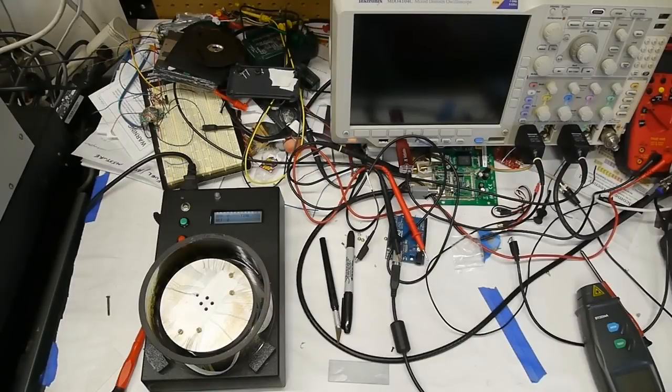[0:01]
Today on Applied Science, I'm going to talk about how I designed and built this spincoater. I'll describe everything I learned about low-cost motor controllers and make all the code and circuitry available in case you have a similar motor-based project. So let's see this thing in action.
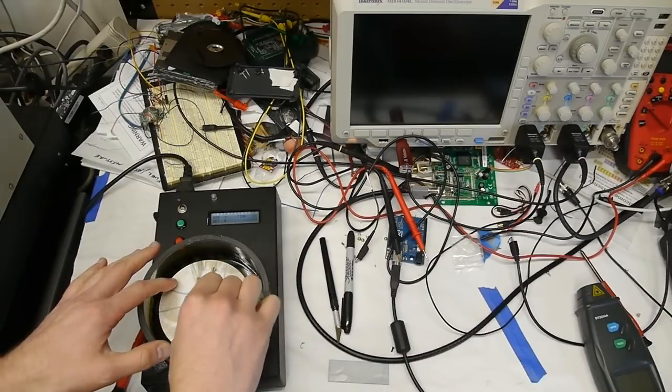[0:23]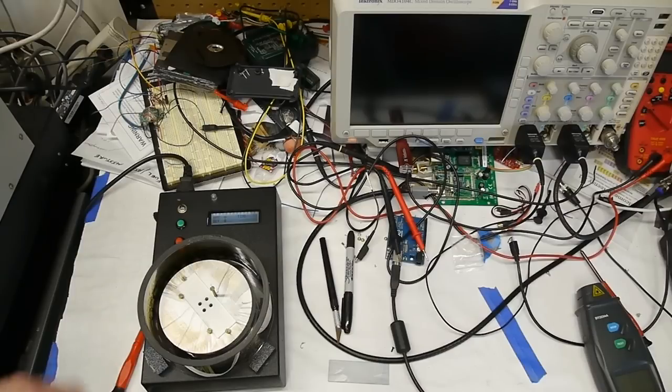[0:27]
It's got a rotor here, and I've put flathead brass screws in here so that when I slip a microscope slide in and put one more screw in, it holds it down and keeps it from moving on the rotor. So I'll press the green button, and it spins at about 400 RPM indefinitely. The idea is that you want to put a liquid onto the spinning slide, and the spinning motion of the spincoater will fling the liquid out and make a very even coating on the slide.
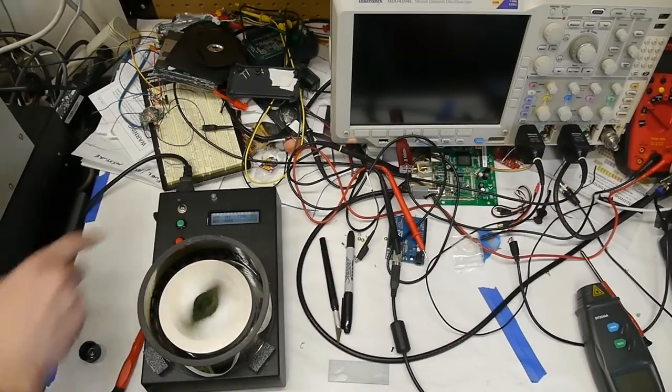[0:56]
So I'm going to use this liquid, which is a photoresist, and I realize I'm doing this under shop lighting, so it's not going to be really useful, but this will just give you the idea. And then we press the green button again, and the machine goes through a very controlled acceleration up to about 3,000 RPM. And when it reaches 3,000, it holds the speed, and it's counting up in seconds.
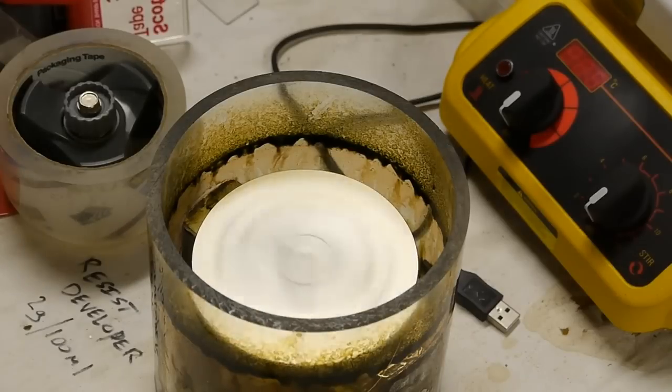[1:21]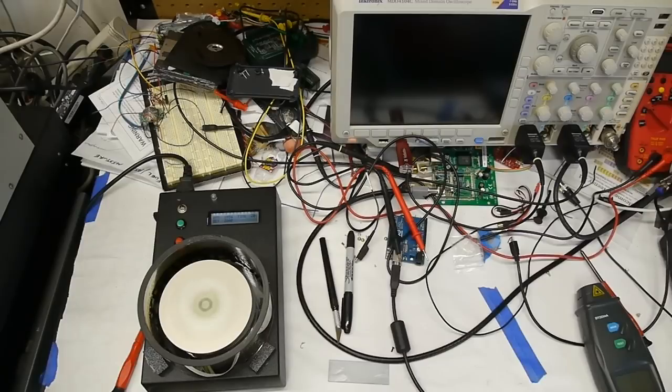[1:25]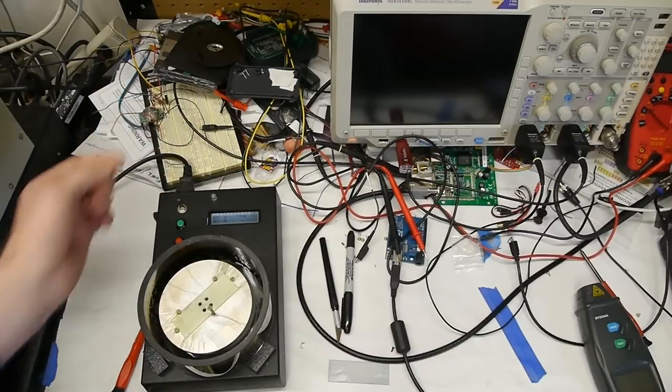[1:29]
So the whole idea here is that we want this process to be very repeatable because we want a very consistent, even layer of photoresist. I had a different spin coater previously that didn't work nearly as well, so this is a really nice upgrade. You'll see we're getting up to about 30 seconds. 32. The machine has a really rapid deceleration, and then you can see that the slide is now nice and coated with this green photoresist.
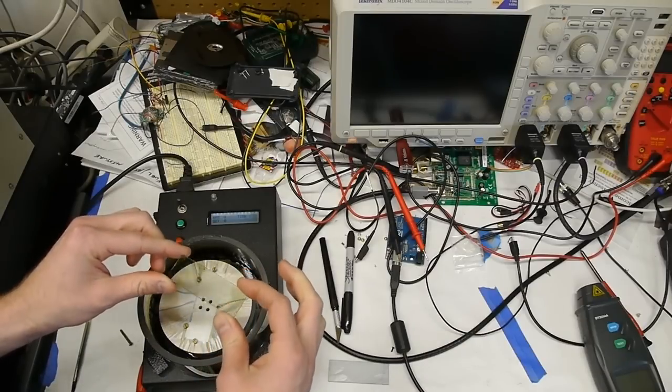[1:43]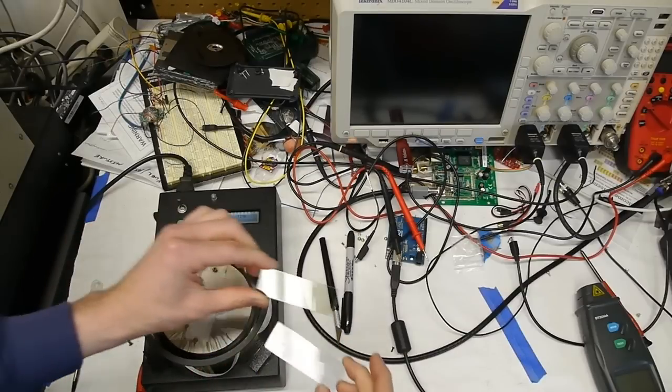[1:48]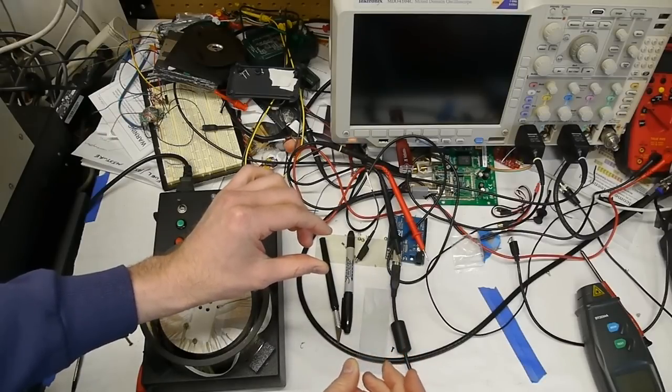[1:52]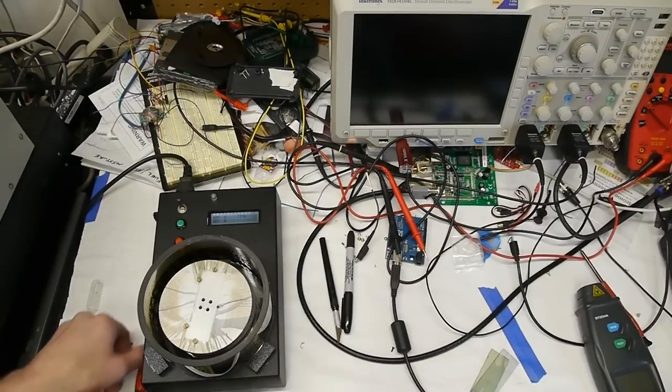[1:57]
So here's a slide I coated earlier, and you can see that after it sits out under the fluorescent lighting, this one is nice and green, this one is nice and blue because it's been exposed by the fluorescent lighting in the shop. So let's take this thing apart, and you can see how it's built.
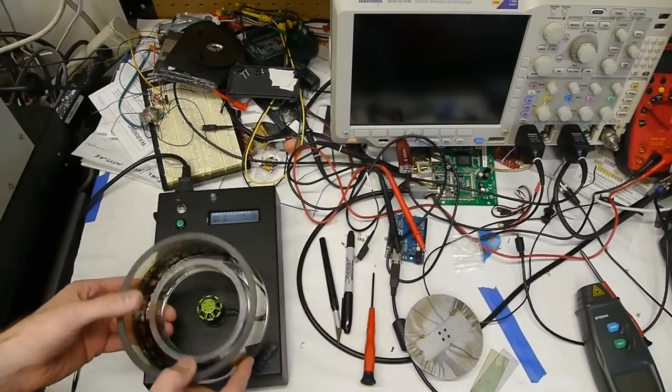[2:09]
This splash guard just lifts out. It's actually just sitting in here captive side to side with these plastic blocks here, but it really just lifts out. And the reason it has this internal lip here is so that when the thing flings excess liquid out, it will fall down into this moat instead of making a mess on the table.
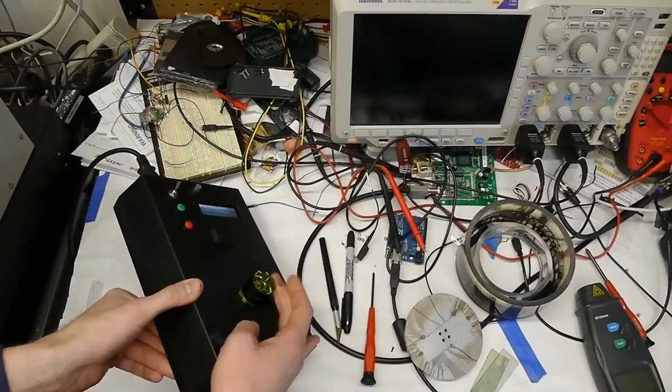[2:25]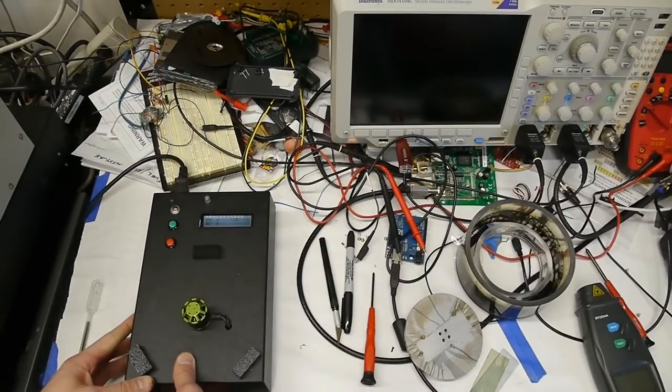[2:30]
So as you can see here, this is using a motor designed for like a quadcopter or something like that. And the reason for that is that the market for these motor controllers and motors for quadcopters is really developed. So you can get these for very cheap. I bought a couple just because, I mean, this is like $15 or $10 or something like that. And the controller for it is similarly about 10 or 15 bucks. It's so cheap that even single chips from DigiKey that would do a similar thing cost almost as much as the entire board. So let's open this up and we can see what's in here.
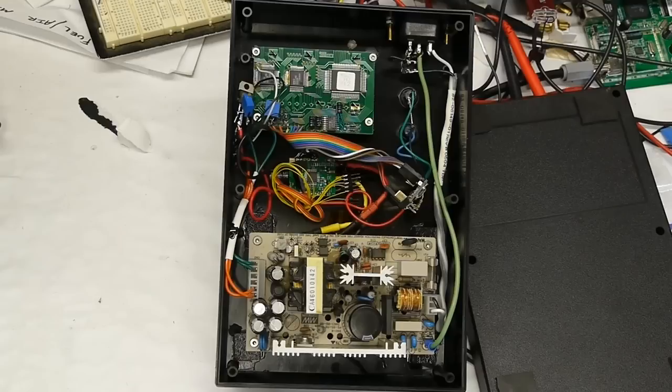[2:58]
Okay, so here's the insides of the box. And this project was definitely a case of using whatever I had available on the shelf. So a lot of these things I already had. In fact, the only thing that I actually bought for this project was the motor and the controller itself. But anyway, let's take a look at this.
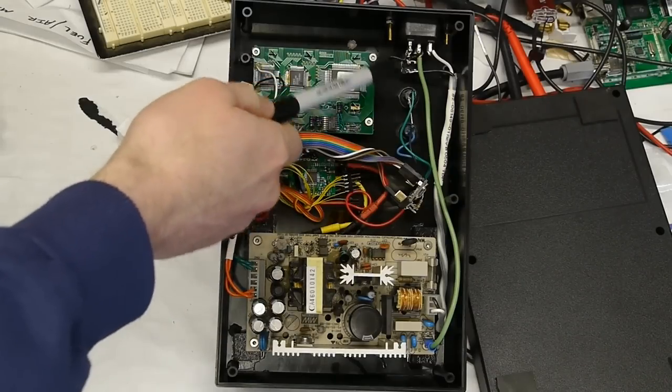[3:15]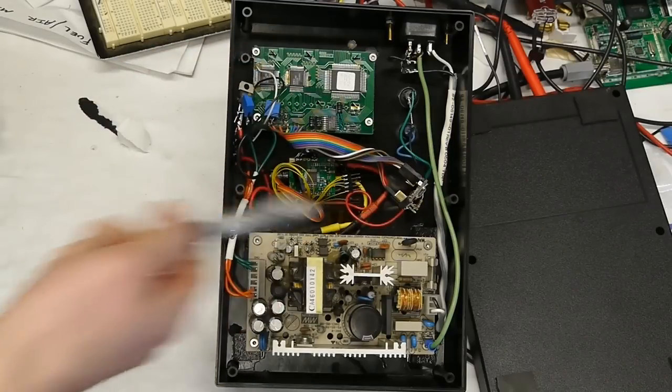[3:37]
So we've got switched mains coming in here, coming down to this switch mode power supply, it's about 7.5 or 8 volts. Kind of weird, but that's actually the voltage that I needed, and I just happen to have this laying around. Then we have an old-fashioned parallel interface LCD up here, the motor controller, and an Arduino Micro that runs the whole show. So those two buttons are just connected right up to the Arduino Micro, and we're using its internal pull-up resistors to sense the state of those buttons.
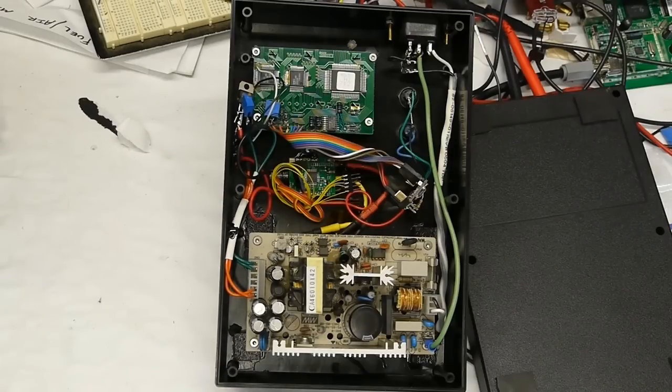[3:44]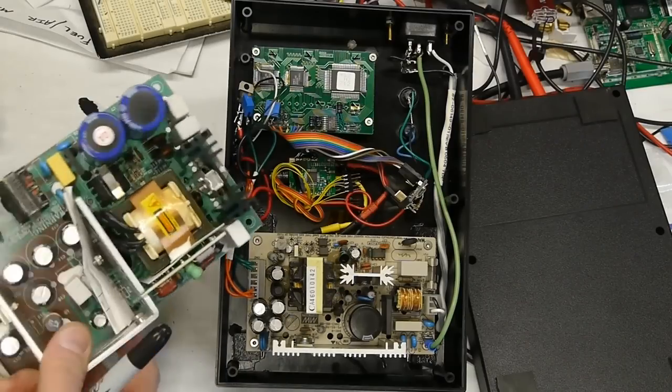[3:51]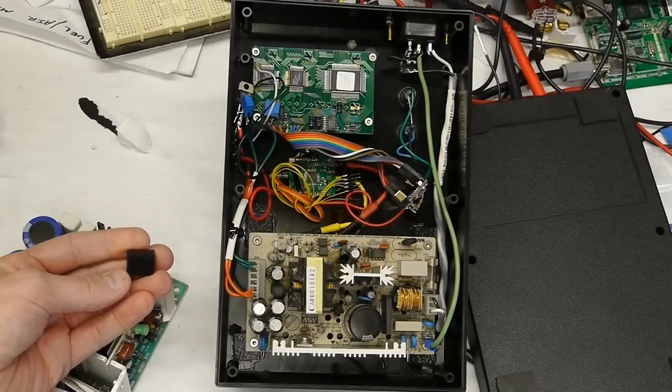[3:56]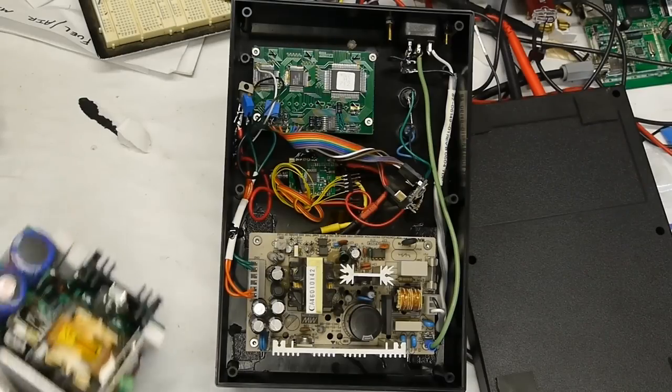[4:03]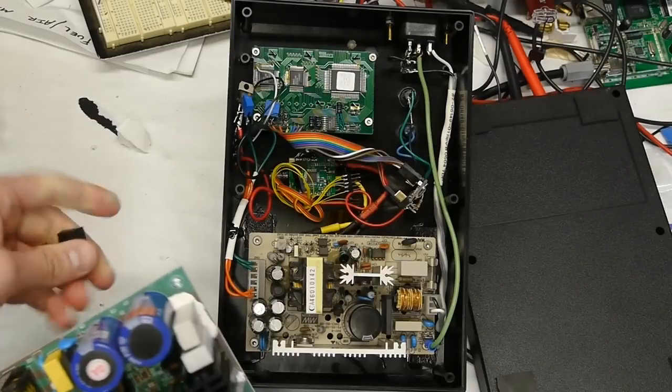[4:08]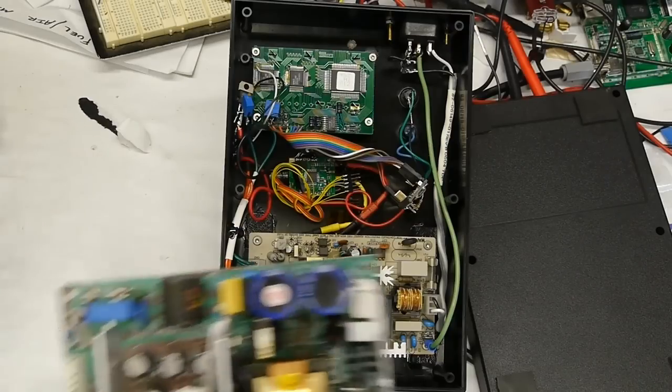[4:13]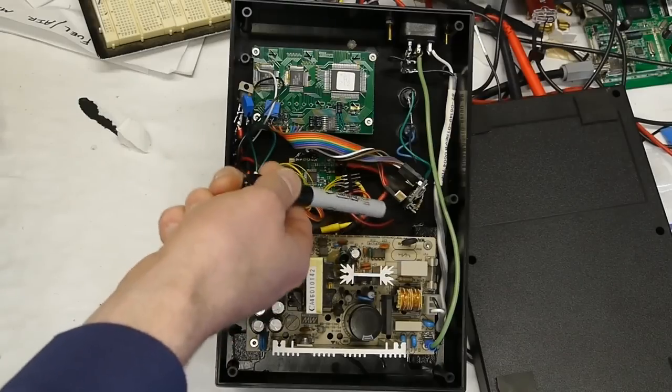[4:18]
A nice little tip, if you're using an ABS project box like this and you want to mount a circuit board or a heavy thing like this, what you can do is cut some chunks of thick ABS plastic, this is maybe 3/8 of an inch thick, and drill a hole and tap it in this chunk. Then attach the chunk with a screw to your circuit board, kind of like that, thread that in there so that there's a plastic foot here, and then just drop the whole thing into your plastic enclosure, and then add some solvent weld.
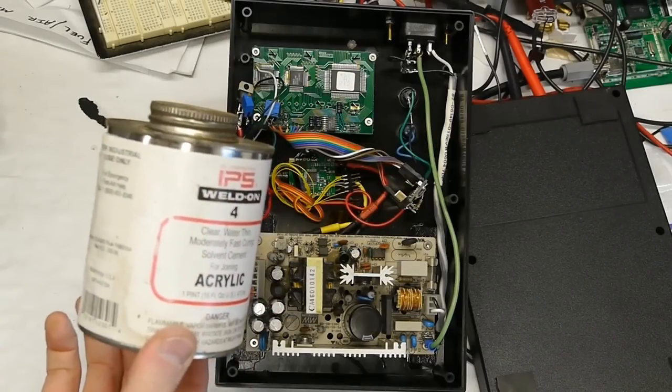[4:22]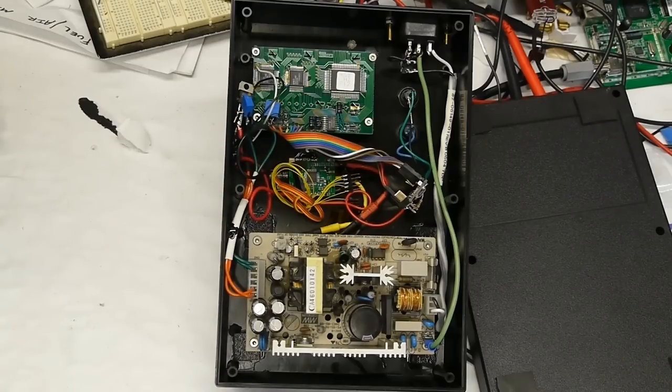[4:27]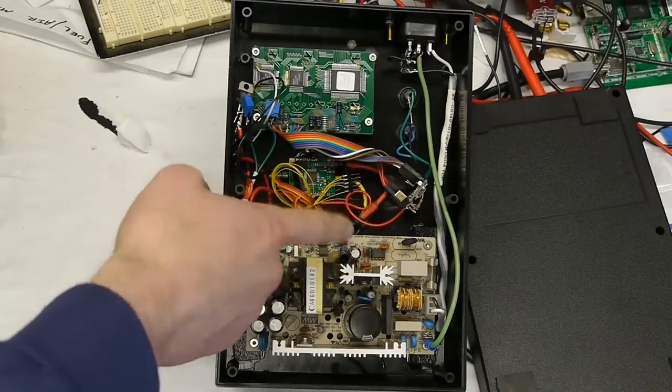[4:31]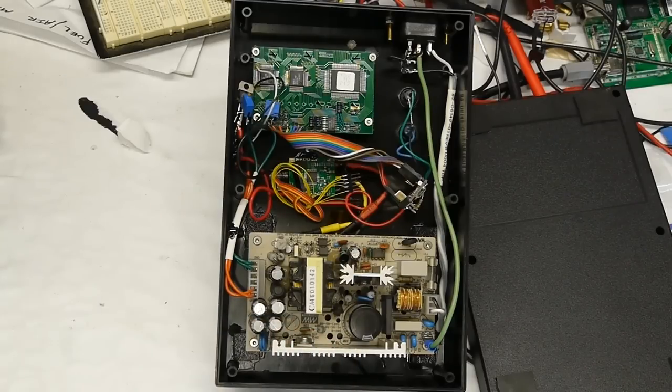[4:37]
I ran out of thickened solvent weld, but you can use this on ABS. You can also just use sewer pipe cement from the hardware store. It works great. Very strong. Like that foot, the project box itself will break before that foot comes off. So if you need to fix something like a heavy power supply board, this works just fine. It also gives you the ability to just kind of move it around inside the project box before you commit to it.
Okay, so let's talk about motor selection for a second. When I started this project, I didn't know that I was going to be using one of these quadcopter motors. I thought, oh, maybe a stepper motor would be okay. This project is not particularly well suited for a stepper motor because the speeds are kind of high. So you saw it was running at 3000 RPM, but potentially we'd want it to go up to 4 or even 5000 RPM, and that's really pushing it for a stepper motor.
In addition, the steppers don't really turn particularly smoothly, and since there's no feedback, you kind of have to add a tachometer or a spin sensor to make sure that you aren't missing steps. I realize that the rotor on this thing is not particularly heavy, so with sort of a known acceleration profile, it's unlikely that you'd miss steps, but even still, you'd probably want some feedback. So I decided not to use a stepper motor.
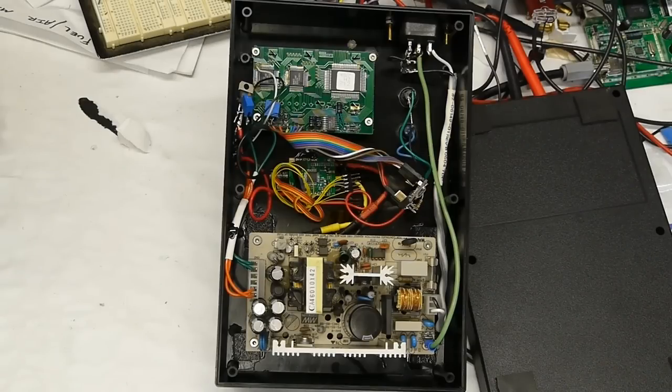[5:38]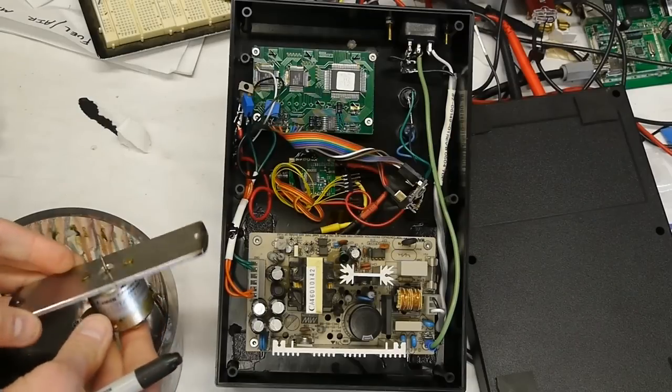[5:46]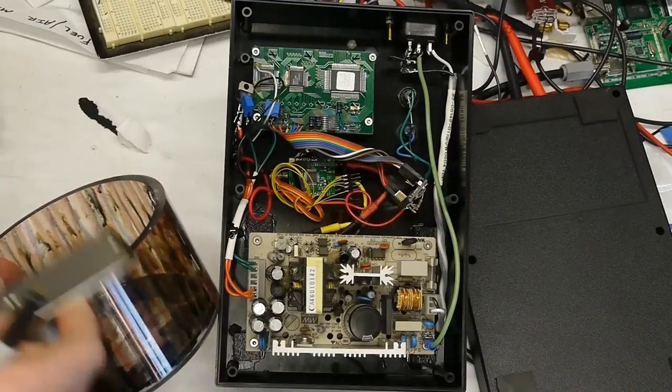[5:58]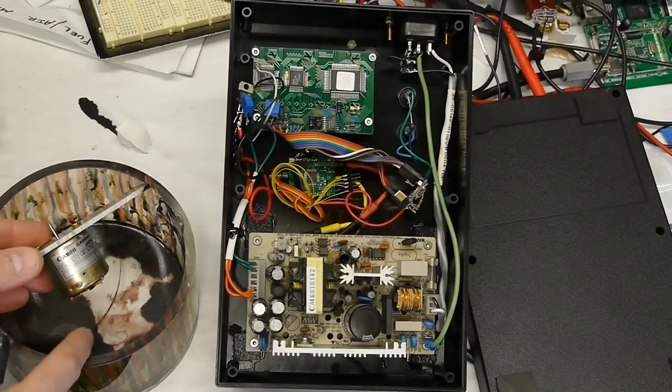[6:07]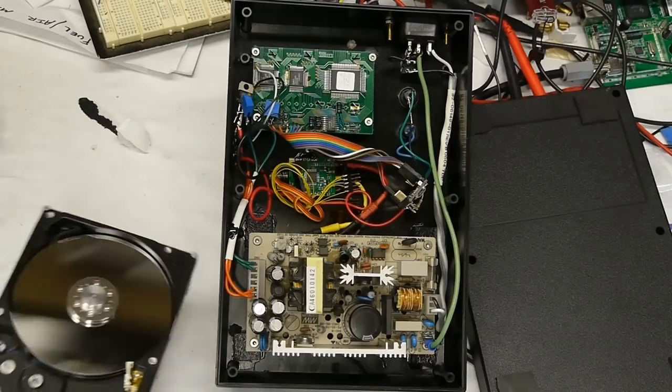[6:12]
And then that leaves, you could just use a plain old DC motor. In fact, in my previous spincoater, this was the older model, I just used this old cheap DC motor like out of an old cassette deck or something like that. And I had that same aluminum rotor pressed onto the shaft here, and this thing sat down in here like this. This thing was a little bit taller, I cut this off to make the new shield. But anyway, it's not quite enough power. It would be nicer if it accelerated and decelerated with more control. So that was out.
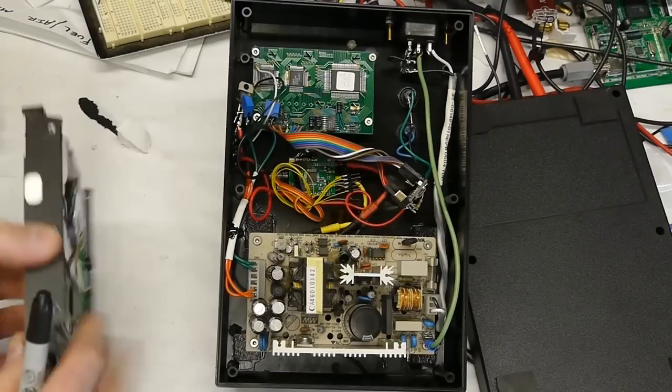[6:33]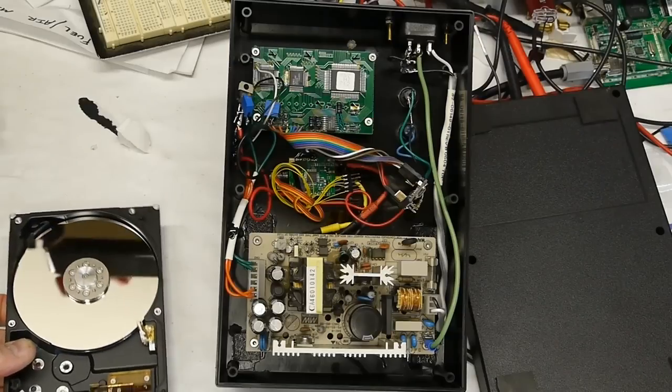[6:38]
Another good idea is to use a hard drive. So when thinking about stuff that already exists in the world that kind of does what we want, a hard drive is actually pretty close. This will get up to 7,000 RPM, no problem. It's even got this nice bearing system so that the thing spins smoothly, and it even already has a disc shape on the front. And the motor is built into this nice aluminum housing, so we can bolt this down, it'd be great. And in fact, if you go on eBay, there's a company selling low-cost spincoaters made out of hard drive motors. And when I say low-cost, I mean like $500 to $1,000 compared to what the semiconductor industry charges for these things, which is probably tens of thousands.
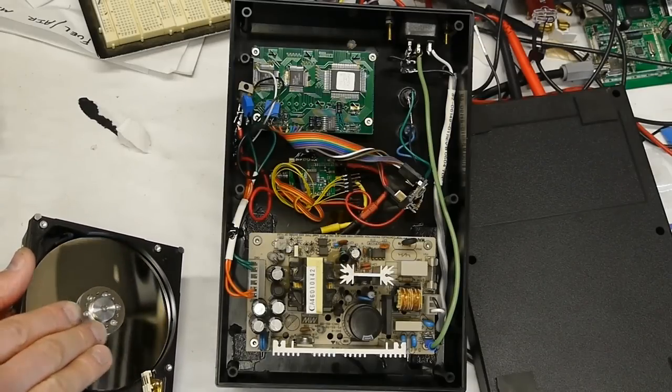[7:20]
There's another nice feature about these. These often have a solid spindle. So this particular one doesn't, but on some hard drive models, the center of the spindle actually doesn't spin because it goes all the way through the motor to the bottom. And the cool thing about that is if you attach a vacuum hose to the bottom, you can put a rubber O-ring on the top, and then when you put your glass microscope slide down on that, you can use vacuum to hold the microscope slide down, and it gives you this nice convenient vacuum chuck. So I liked that idea.
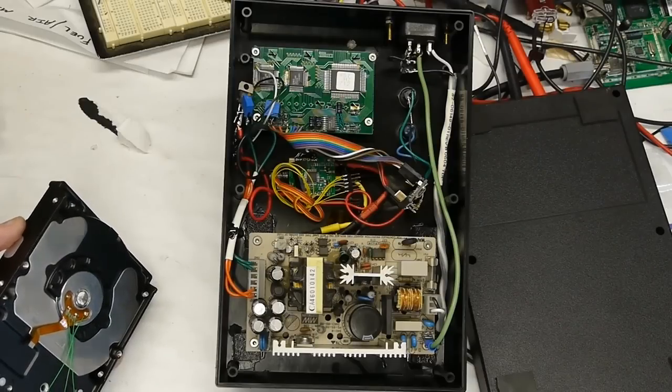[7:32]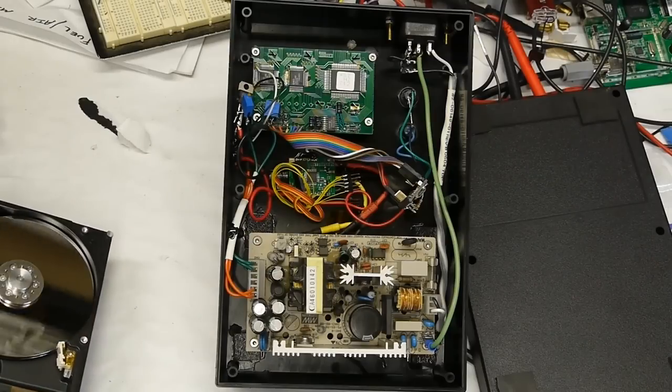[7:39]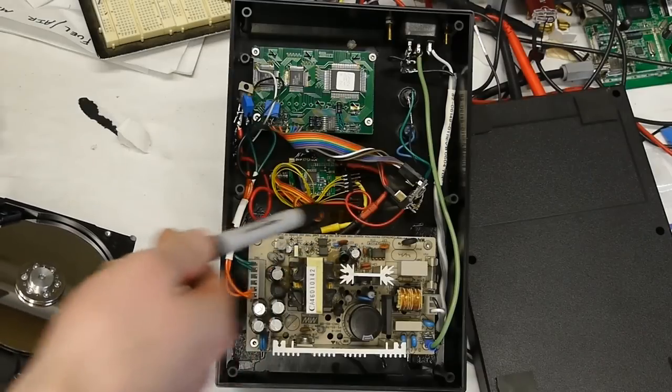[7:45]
However, these motors still don't have quite enough power. So, your 7200 RPM hard drive may take 5 or 10 seconds to come up to speed, and that's actually about right. But when I started this project, I thought I needed to have much faster acceleration to have a good spincoater. And in a minute, I'll show you this thing connected up with the debug port, and it's actually pretty impressive how quickly this thing can change speeds.
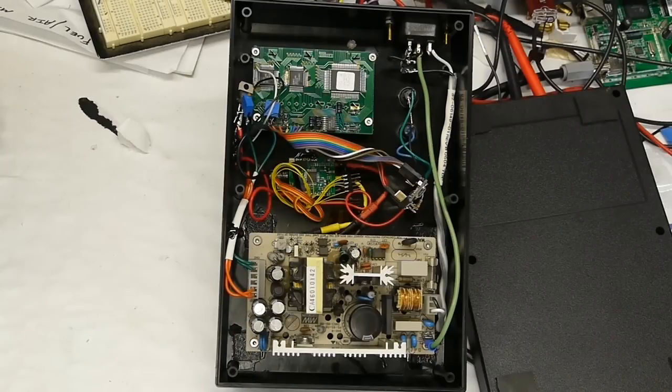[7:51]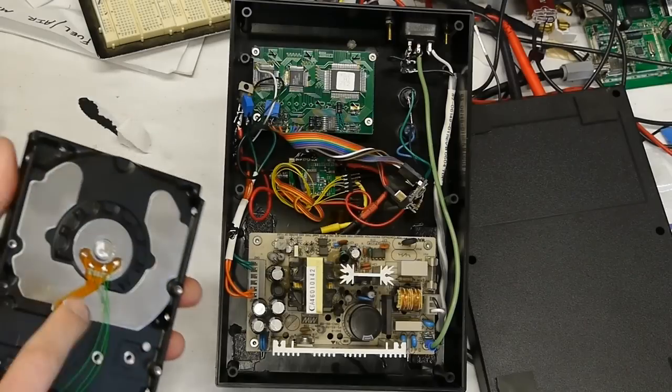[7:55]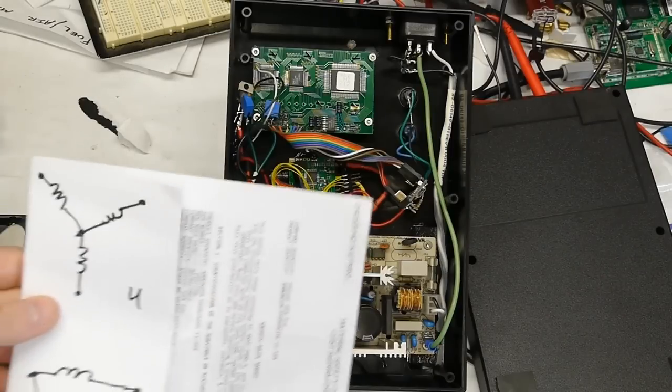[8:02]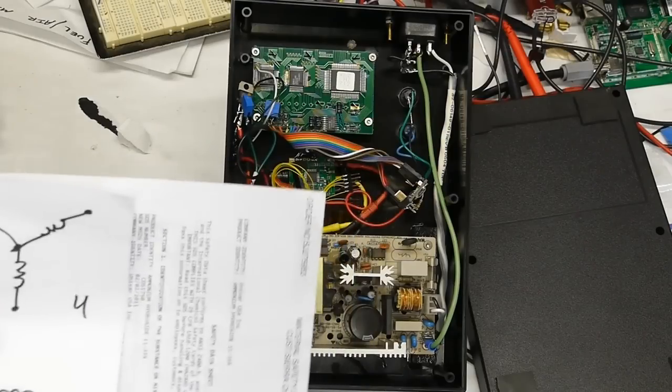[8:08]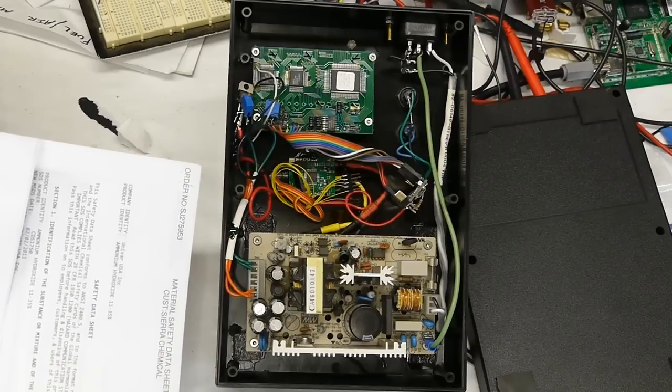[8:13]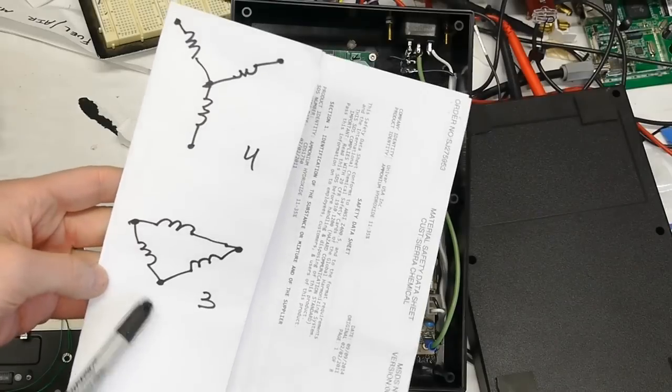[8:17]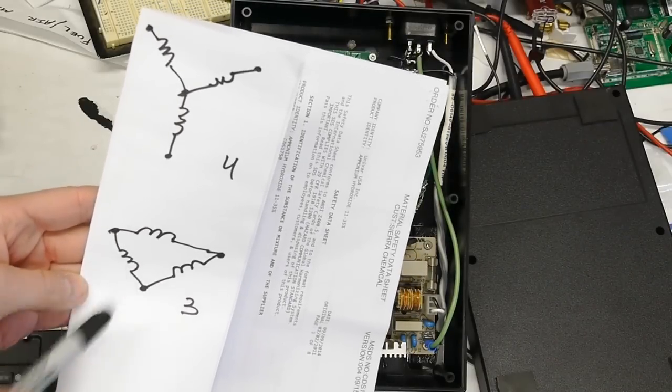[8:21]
Another slight problem with using a hard drive motor is that this is a 4-wire brushless DC motor, and it's wired up in what's called a Y configuration. So the 4 wires are 1, 2, 3, and 4, and obviously it's called a Y because it looks like that. But most of the brushless DC motors that are built for quadcopters and similar things are 3-wire, and it's called a delta configuration because it looks like a Greek delta. And so the 1, 2, 3 wires there, and these are not really interchangeable.
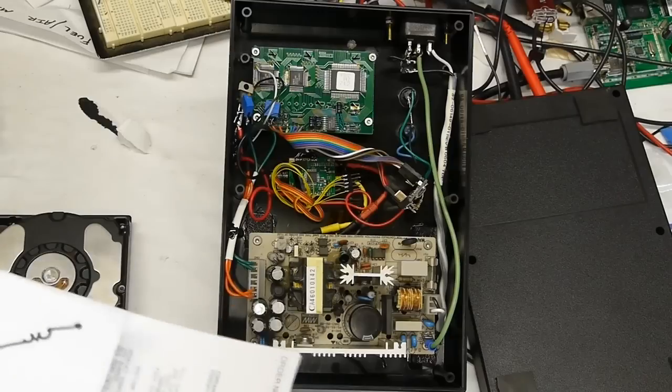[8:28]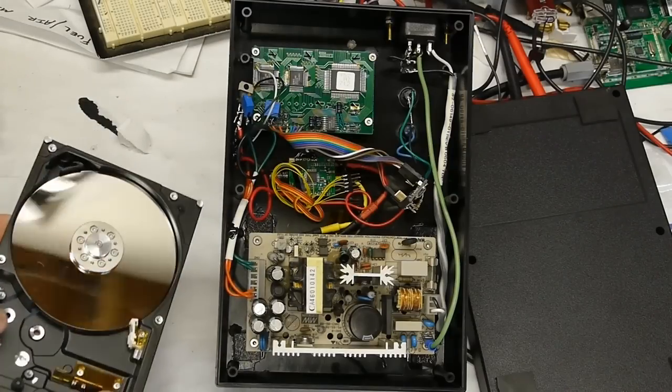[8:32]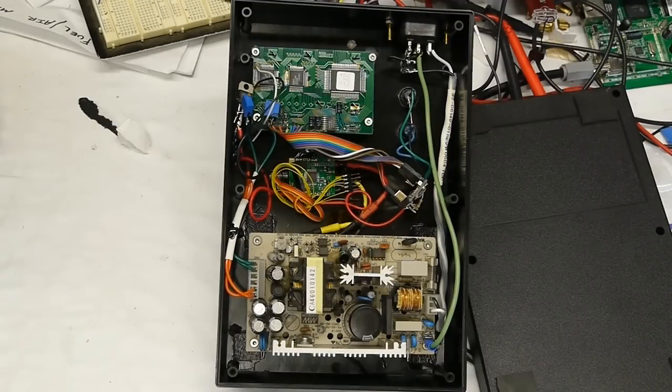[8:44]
You can sort of get away with it a little bit, but generally not really. And also the coil resistances for these are generally not quite the same as they are for quadcopter motors. And then later on you'll find out that the controllers that they make for these things are so cheap that it's just silly not to use them. So I decided not to go with the hard drive motor.
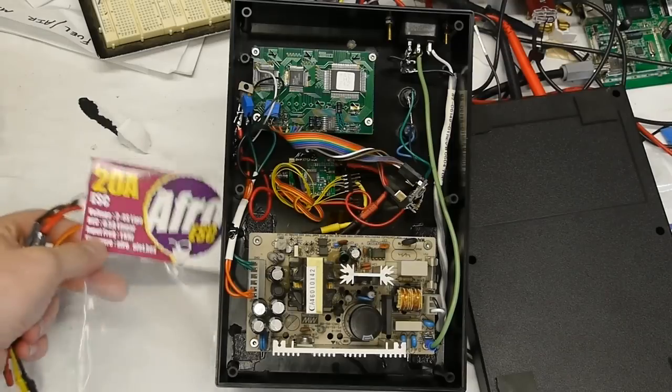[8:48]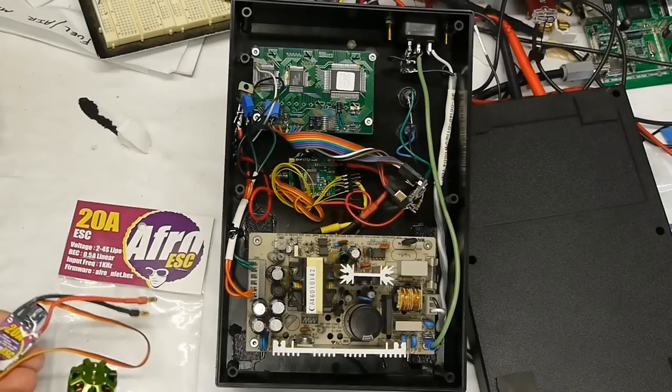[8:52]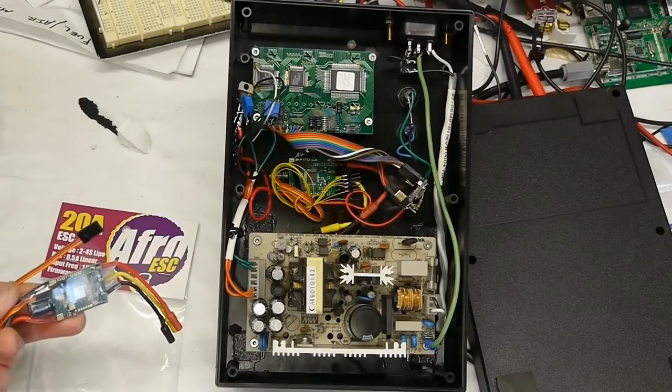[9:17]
If you go to a site like Hobby King or one of the places that sells a whole bunch of stuff for making your own quadcopters, you'll find the prices on these things are just really low. I mean, this was probably $10 or something. I think they even have small motor controllers that are even under $10. And it's kind of silly because if you go to DigiKey and just look up the parts, like if you just buy all the FETs to make this, or even a monolithic chip that's got all the FETs in there, even that's going to get close to $10 just in parts.
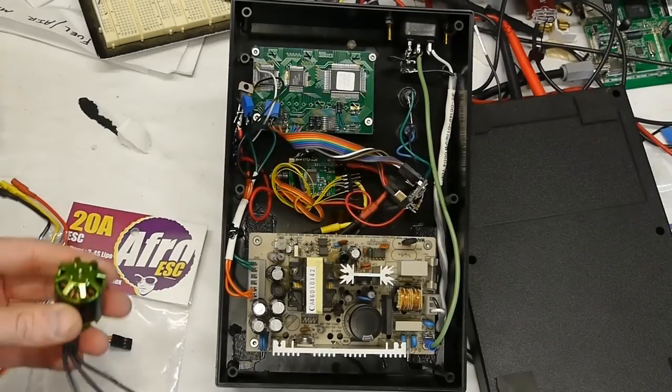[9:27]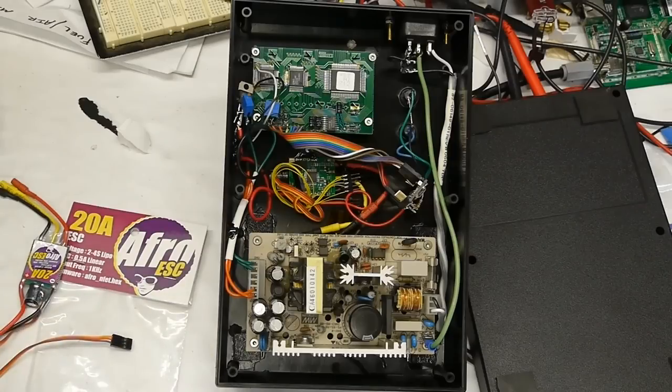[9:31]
And so it's kind of silly to not buy this since it already has the firmware, it already has the controller, the capacitor, I mean, everything. And then the motor itself is $10 to $20, and it's known to work with it, so you kind of are guaranteed a working system just with these two parts.
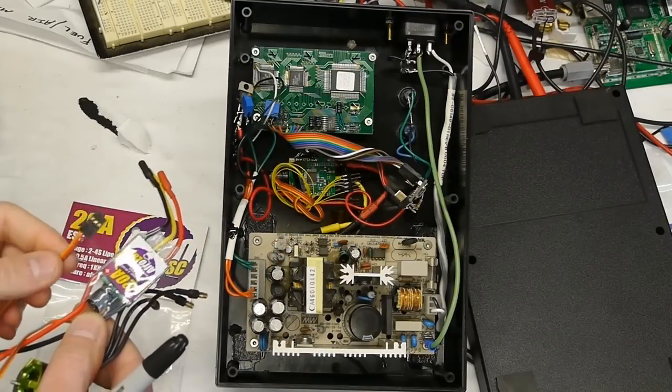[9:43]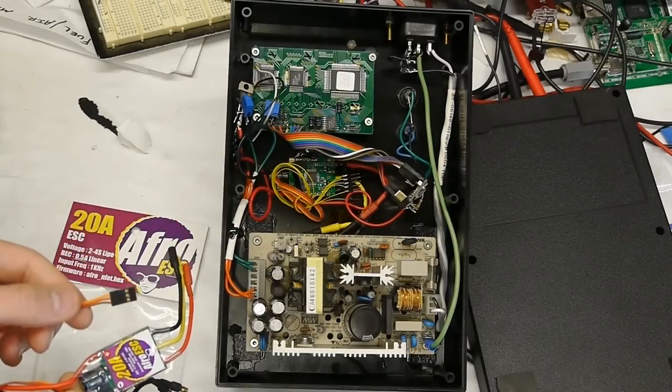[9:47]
If you wanted to take a simple approach, you could just use these parts as they are, and these motor controllers are designed to be controlled by this servo standard. So it's 3 wires: ground, power, and the servo signal, and the servo signal is just a pulse width that varies from I think half a millisecond up to 1.5 milliseconds, and that sort of indicates the throttle range. So you could totally connect this right up to your microcontroller, and people have already written servo libraries, so you can just tell it how much in percentage you want, and everything will work just fine.
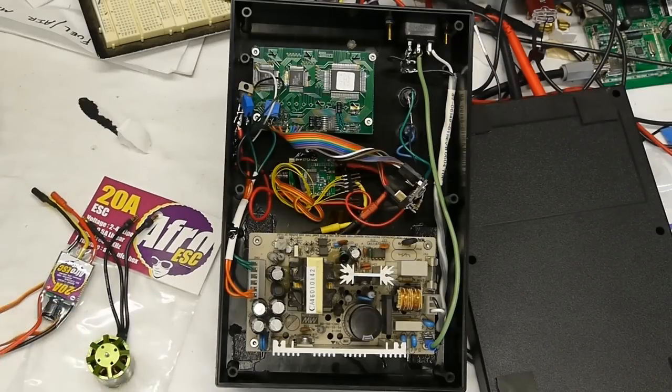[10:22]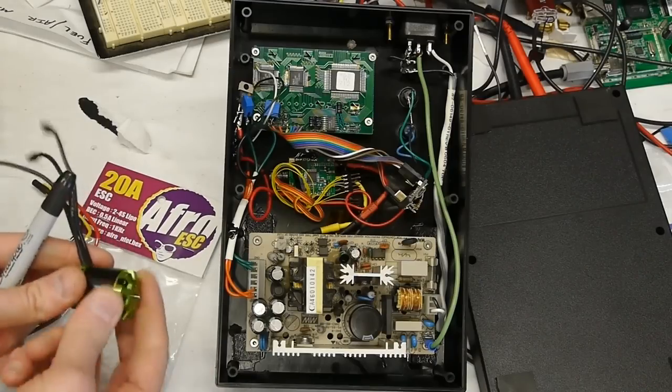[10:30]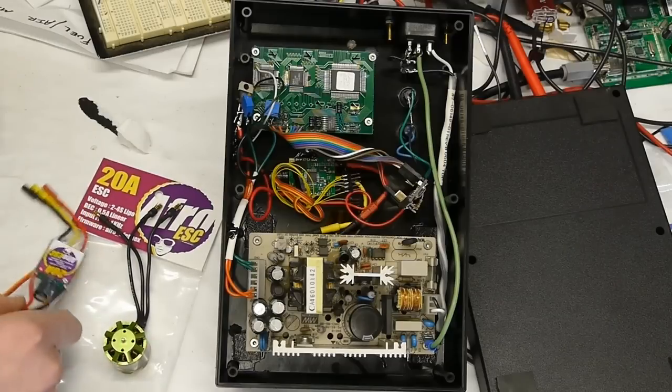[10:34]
So there's almost no tweaking to do, although I wanted a couple extra bits of functionality. One of them is that I wanted this thing to slow down on command. Since this is built for a quadcopter, there really isn't any need to brake the motor. So if you lower the throttle, just the air resistance of the propeller that this thing would normally be connected to will slow it down. But you can actually configure these things to be engine braking, regenerative braking, and even just full braking.
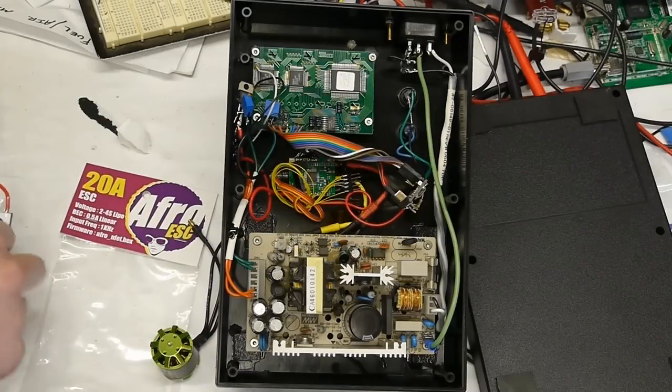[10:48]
And luckily enough, the community is really well developed around these things. In fact, I don't know of any other product that actually lists a hex file on the package. It says afro_nfet.hex. And at first I was thinking, why would they just put the name of a hex file on a package? I mean, what does that even mean? And then you realize that you're entering this entire huge community that's very, very well developed, where there's a lot of jargon going on and it takes hours just to figure out what's going on.
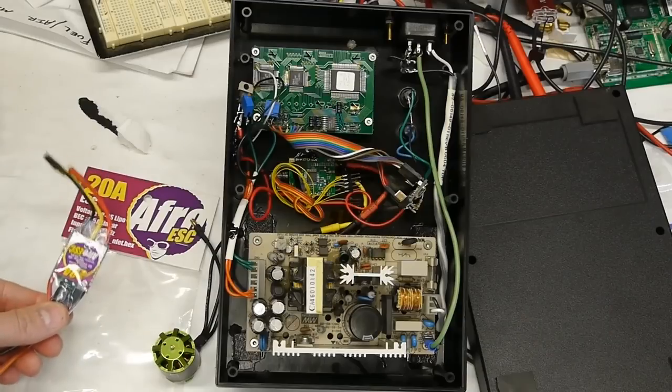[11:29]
But basically, the hardware has become very standardized, and lots of folks have written their own firmware, and modding it is super common, and it's actually very well documented. It just takes a while to get going. So take a look at the description of this video, and I'll put links that will save you a lot of time if you're interested in modifying the firmware for one of these.
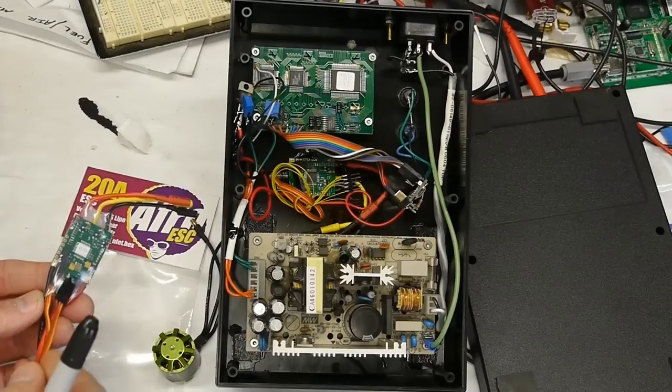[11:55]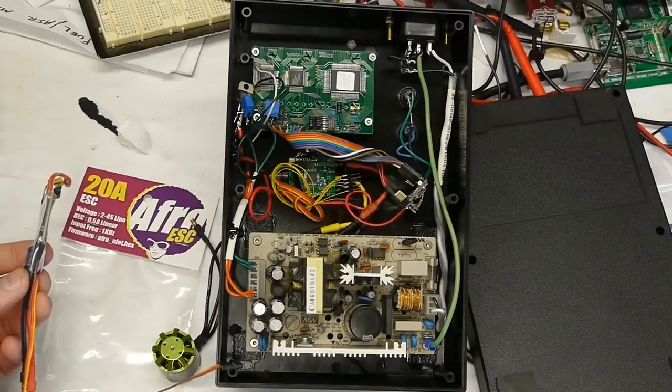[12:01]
For better or worse, it is written in assembly, although again, it is fairly well documented. Another interesting bit is that some of these are made to be programmable over the servo wire. So with just three connections, you in theory can send a bit stream over the control wire if you give it the right sequence. And someone even wrote a Chrome extension such that you can flash your firmware through Chrome just with this one connection going to, I think they sell a little USB programmer.
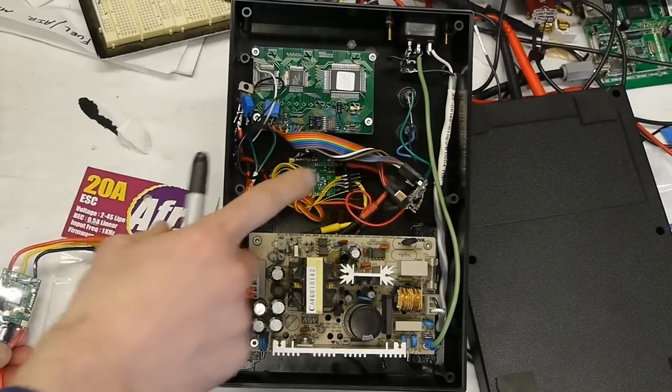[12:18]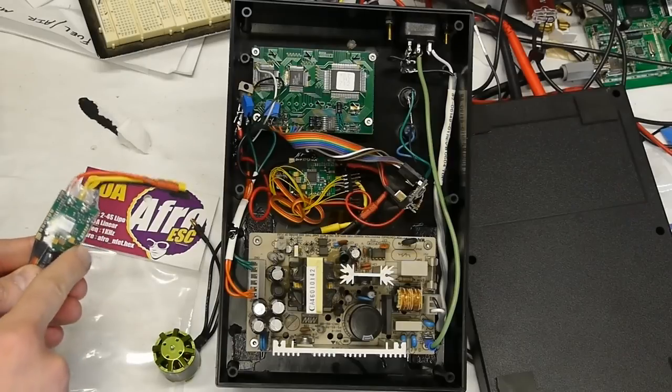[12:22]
So I tried it using an Arduino as the programmer. You can also connect this to an Arduino and use that as the programmer, but it didn't work. In fact, it actually ruined my device, and luckily I was able to recover it, but it did actually stop it from working. So I can't endorse that route, but luckily on this particular board, they've actually broken out the in-circuit programming port.
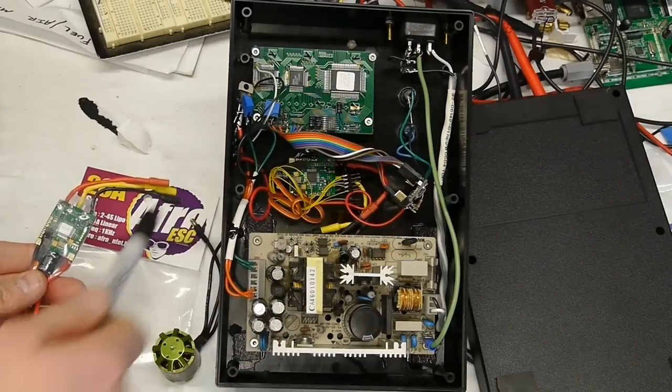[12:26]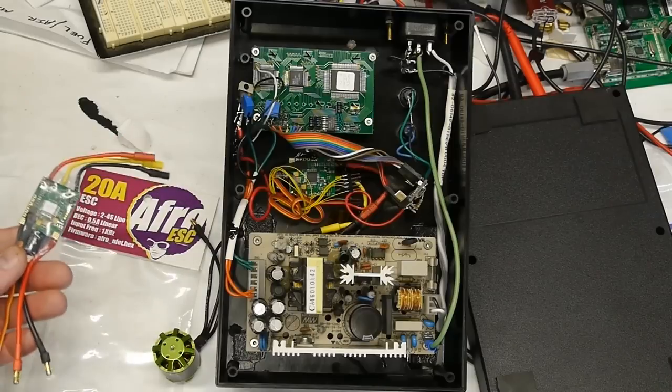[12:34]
And so these yellow wires here are going to a programming header. And again, I just used an Arduino as my programmer, compiled the assembly, downloaded the firmware to this thing, and everything worked great. So I'll put details to that in the description.
So here are the mods that I made to this thing in the assembly firmware. One is that instead of controlling it over this servo half millisecond timing pulse, you can actually configure this thing to accept I2C commands. This is pretty cool, since you could potentially have 5 or 10 of these motor controllers in a project and control all of them over the I2C bus from your microcontroller, whatever you've got.
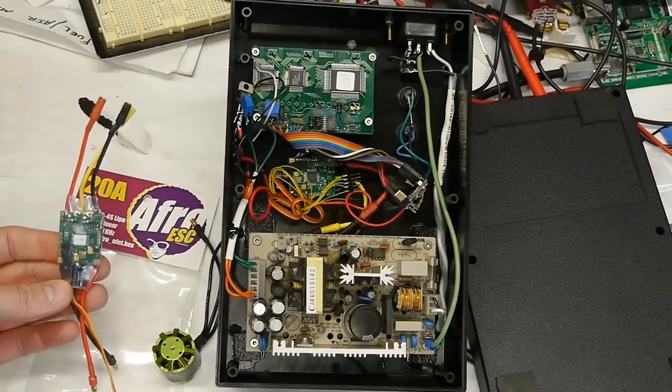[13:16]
So that's cool. And then also, instead of relying on the timing accuracy of microseconds to get the signal you want, if you're actually giving it the value you want over I2C, you can be much more accurate and much more reproducible. So that's good. And then also, I wanted this thing to slow down if I gave it a slower speed than where the motor was currently spinning.
Like I said, for most quadcopter applications, engine braking doesn't really make any sense, because as soon as you lower the throttle, it'll slow down. But for RC car applications, sometimes you want regenerative braking. So that's a switch in the code that's relatively easy to flip.
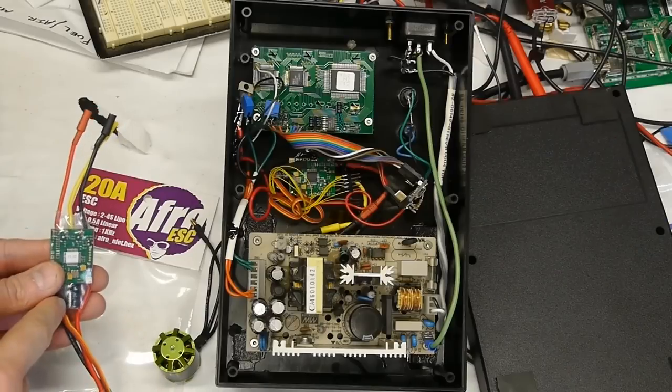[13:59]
Also, if you give this thing the command of zero speed, it can do a much more aggressive braking thing. So instead of regenerative braking all the way down to zero, if you give this a zero, it will essentially short out the motor windings in the controller so that it will decelerate as quickly as possible. The difference is that when it's regenerative braking, it's still commutating so that the thing knows where the rotor is, and then you can speed back up quickly if you want. If you give it the command of zero, that will actually stop commutation, so it no longer knows where the motor is. It's just going to try to slow it down as quickly as possible.
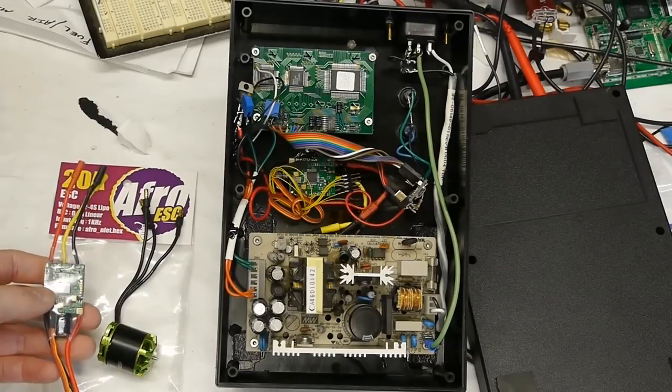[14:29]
I should add that a lot of these hobby brushless DC motors come in two flavors, sensored and sensorless. And sensored doesn't mean it talks like a sailor, it just means that they have Hall effect sensors in here so that the controller can know the position of the rotor at all times. And if it knows that, then it can apply the current to those three windings in such a way that it can always make the rotor spin exactly in the way that it should to get a decent rotation.
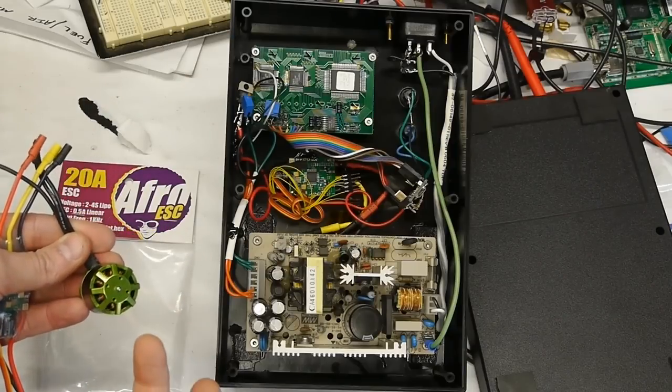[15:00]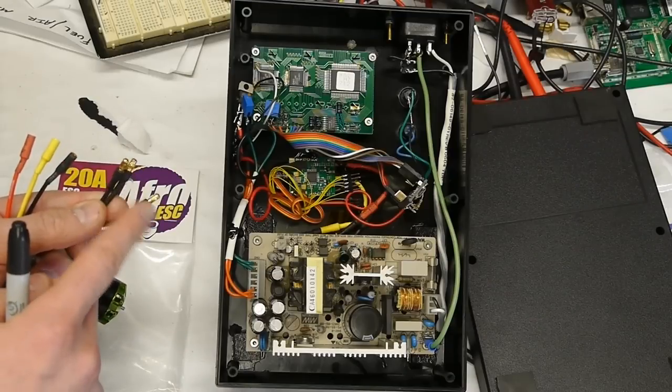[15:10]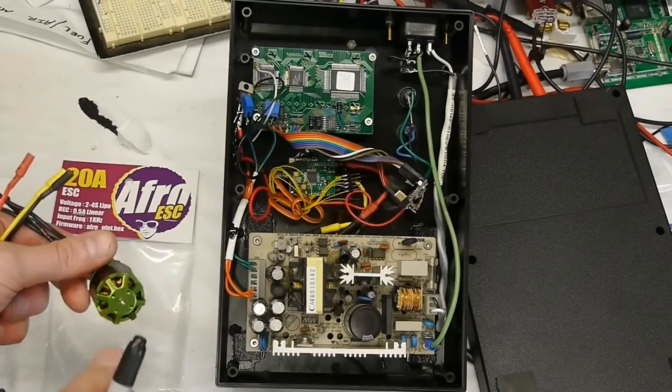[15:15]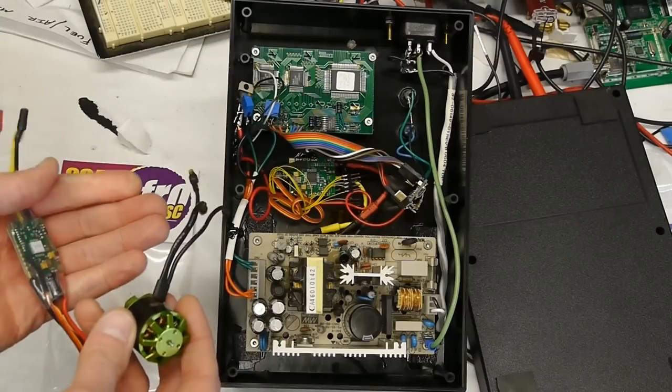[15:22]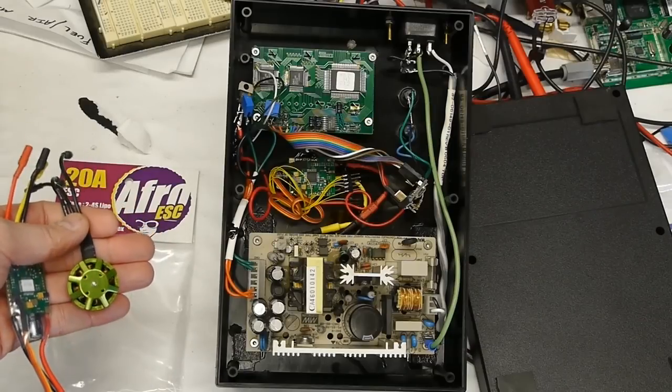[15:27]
With a sensorless motor, if this rotor isn't spinning, there's no electricity coming out of these things. And with no Hall effect sensors, the controller has no idea where the rotor is. So the only thing it can do is give it essentially a random pulse and then wait for a minute and see if the spinning rotor induces a voltage on the unused pin. And then it can figure out where the rotor is based on the voltages that it's creating just from its spin. So a lot of times you'll see one of these motors start up, it'll actually go backwards for about a half turn, and then the controller realizes it started it in the wrong direction. But once it's moving, then it knows where the rotor is and it can speed up again.
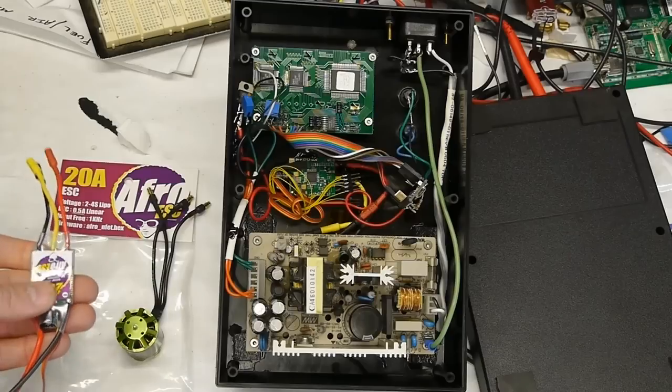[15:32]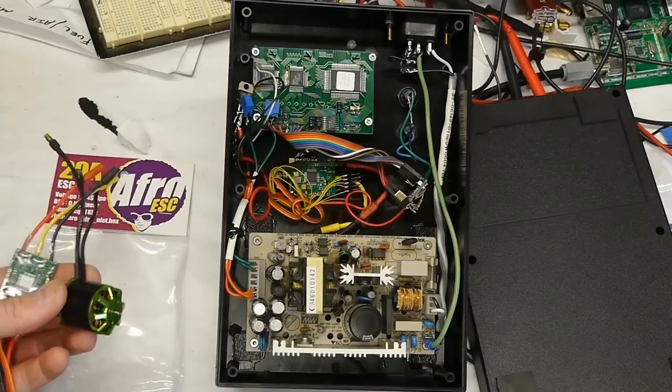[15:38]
So the sensorless motors are a bit more common and cheaper, and for applications where this is not connected, like you'd want a sensored motor if you were driving a bicycle or a vehicle, because the wheel is in contact with the ground, and it doesn't really have the ability to just kick it backwards for a half turn to see where the rotor is. So it kind of needs to have a good way to accelerate from zero.
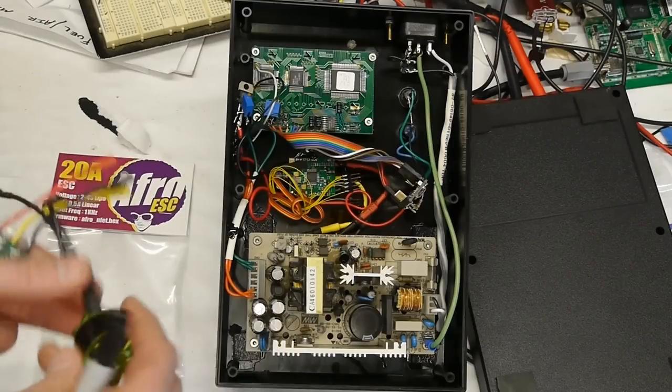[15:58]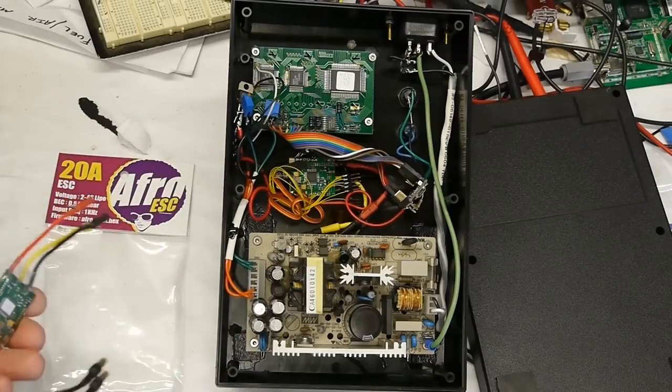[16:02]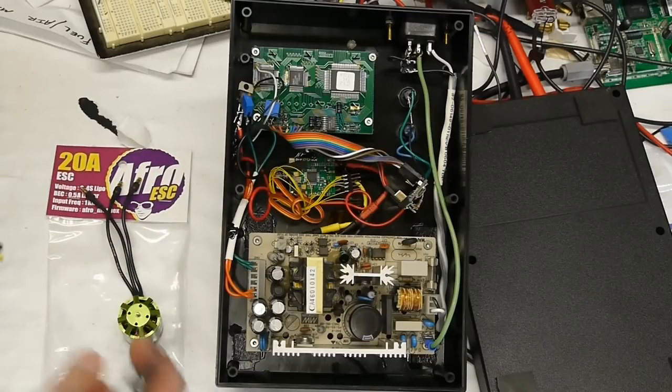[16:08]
For a quadcopter application, it's just connected to a propeller that's just sitting in air, so it's easy to get the motor started. In retrospect, I would probably try to go for a sensored application for this thing. But another challenge was getting a motor that doesn't spin too quickly.
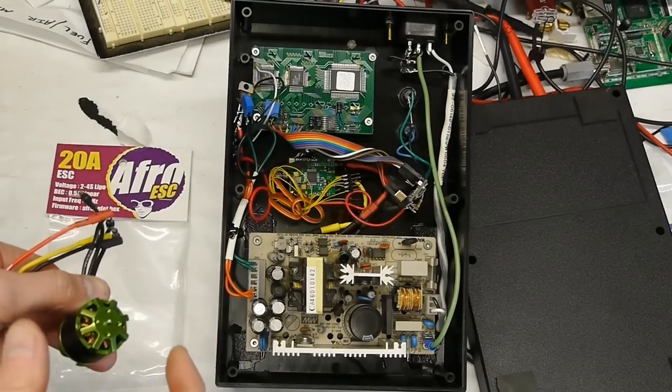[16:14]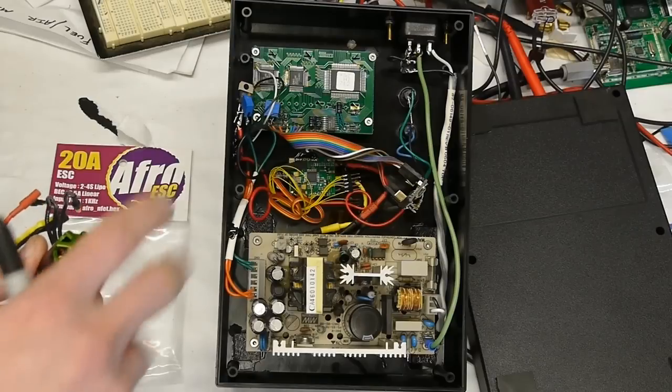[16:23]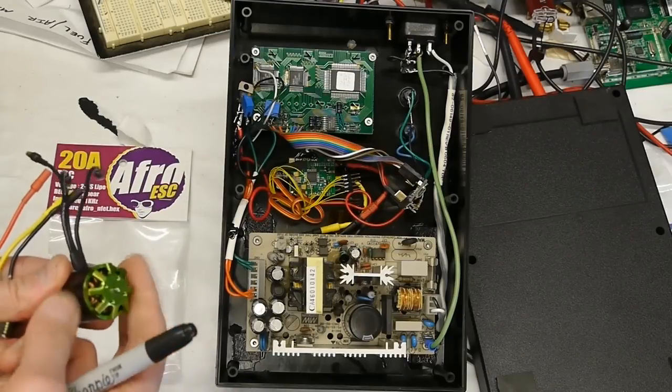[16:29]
So these things are designed to be connected to small propellers and they spin very fast, you know, 10,000, 20,000 RPM even. But I wanted to go slow. So when I was dispensing the fluid on here, you know, 300 or 400 RPM is fine. And getting a motor that actually goes that slow is tricky.
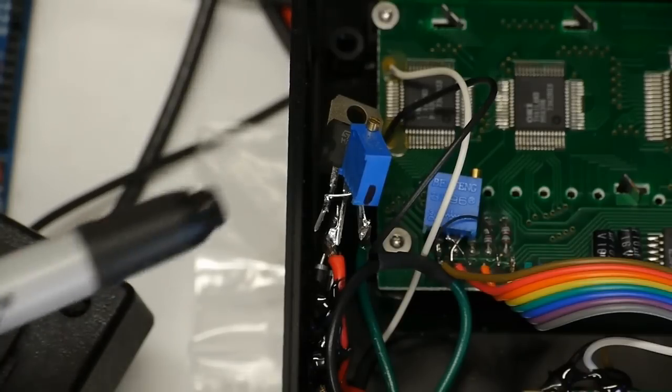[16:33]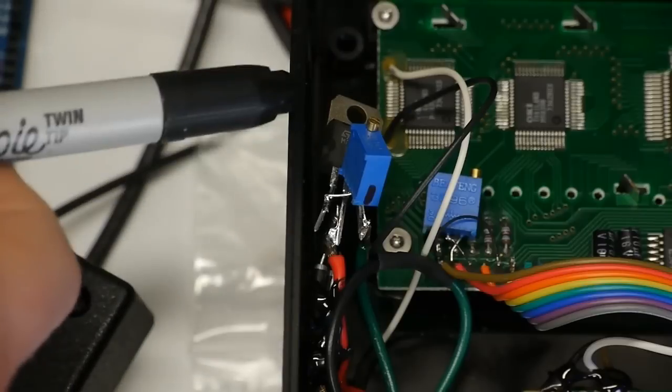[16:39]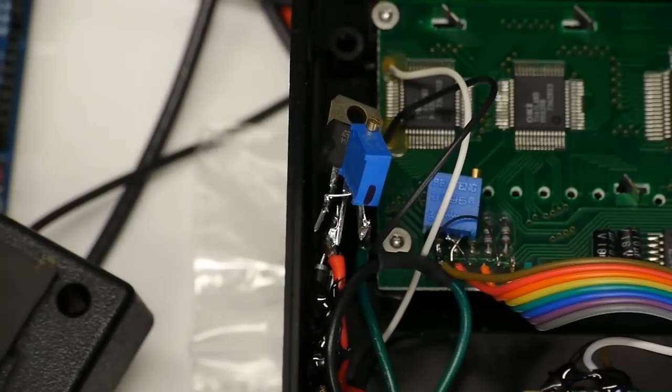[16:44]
I thought I'd point out another bit of circuitry before we move on. This is kind of a weird little device. It's a potentiometer voltage divider, and the output of the voltage divider is connected to the gate of a pretty beefy NFET. And then the source of the NFET is connected to ground, and the drain is connected to VCC, basically the 8-volt output of that power supply.
And since I mentioned I wanted this thing to be able to slow down if I commanded a lower RPM than it's currently spinning, it has to do something with all the energy that's currently in the rotor. And since it's continuing to commutate, it can't short out the motor windings because that would prevent the controller from seeing where the motor is. So what ends up happening, since it's basically a regenerative braking system, all of the energy stored in that spinning rotor has to go back into the power supply.
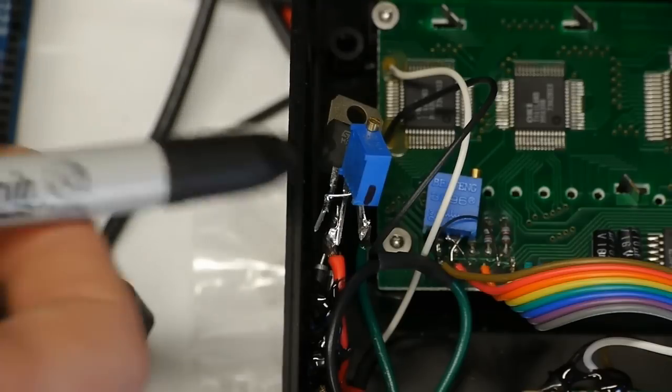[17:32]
But that 8-volt switch mode power supply is not too happy about it. In fact, it's not able to sink much current at all. So there has to be some way of getting rid of that excess energy. So what this is, is basically a programmable Zener diode. In normal operation, the NFET is not turned on at about 7 or 8 volts. But as the voltage rises, it eventually turns the NFET on and starts conducting. It eventually looks like a short if the voltage gets high enough.
So I don't know if that's really production quality. I don't know if I would put that in a real production circuit. In fact, I've never seen anything quite like that before. But it is very simple, and it does work very well. I haven't tested it over temperature stability or anything, but let me know what you think about that.
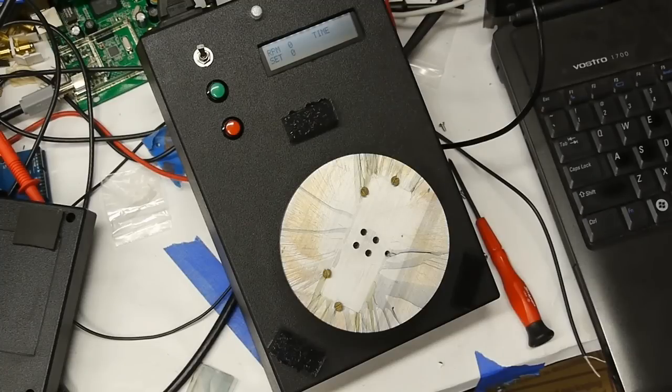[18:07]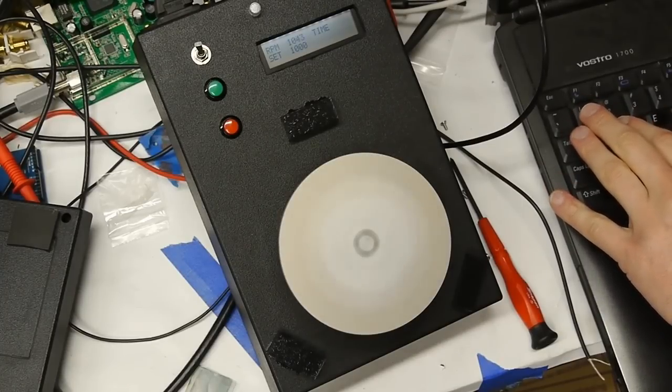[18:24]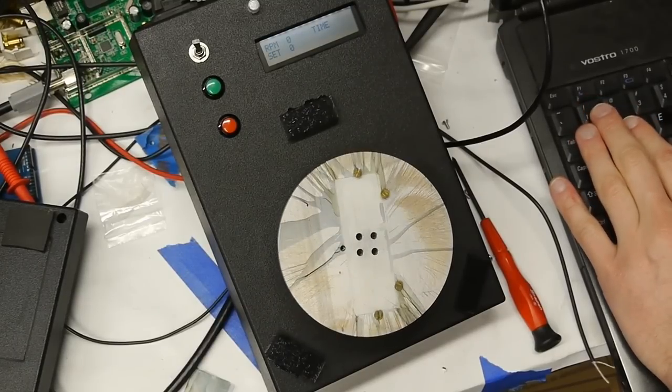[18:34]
Part of the goal of this project was just to write a really tight PID control loop for this motor system so that I could command any RPM and get it to go to that speed very quickly. Even though it turned out for spincoaters, it's not critical to have a really fast ramp rate. So I'm going to control this through the serial interface and just command it to go to 1000 RPM. So you can see it starts up and does just fine. Try 2000. It manages to reach the speed very quickly and comes to a standstill.
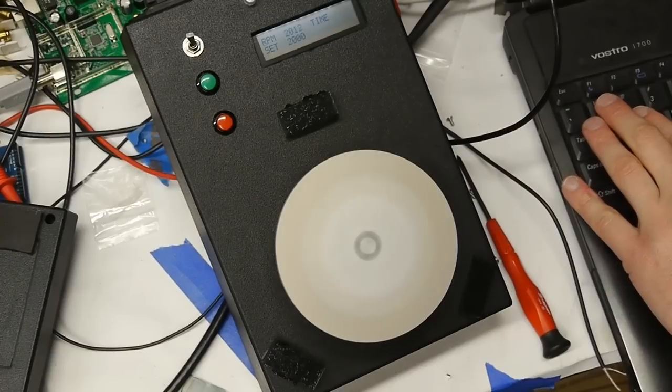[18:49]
So when I command a zero speed, then it's using full braking and it stops commutating. But if we go from, say, 2000 down to 1000, then that's essentially the regenerative braking thing where that funny circuit is absorbing the power. Let's try that. There's 0 to 2000, and if we go to 1000, it's not quite as quick, and part of that is because the circuit is not really designed for regenerative braking, and so it doesn't pull as much energy out of the system as it could.
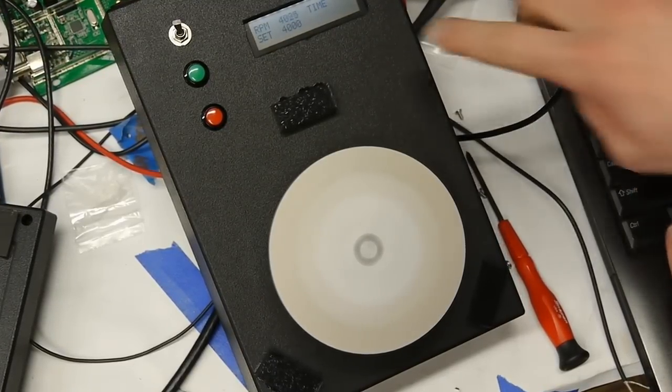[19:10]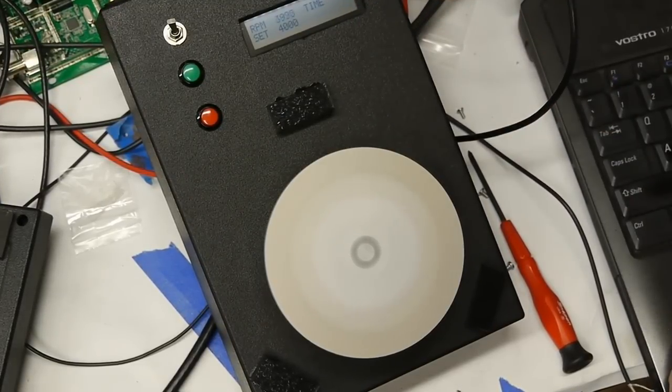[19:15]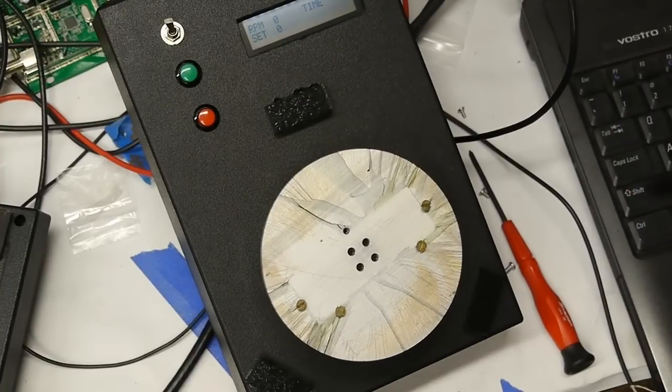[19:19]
But to go up to 4000, it's not quite as snappy because I've limited the total throttle setting just because I don't really need to go that fast. But it is kind of neat to see the thing go to its extreme performance limits.